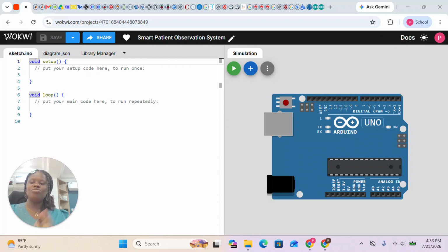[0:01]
And welcome back. So today we're going to be creating or simulating a smart patient observation system. It's a prototype healthcare monitoring solution that is designed to demonstrate how embedded systems and connected technologies can be used to support patient observation, improve response times, and enhance healthcare delivery, right? So the system is going to be using Arduino Uno, which is a microcontroller, right, to collect information from different sensors, which represent common conditions within a patient care environment.
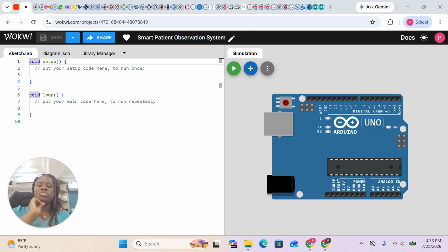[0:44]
So this sensor's reading will be displayed at the end of the day on a dashboard, which we're going to build later, which allows healthcare personnel such as nurses, or whoever is going to be taking care of this patient, to monitor the patient's conditions remotely. So this is what we're creating today, all right? We're building the embedded system, and at the end of the day, we're also going to build a dashboard, and we're going to see how to use this to communicate. So this is what we're doing today.
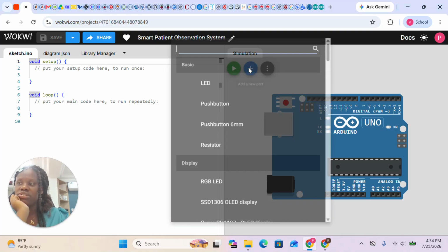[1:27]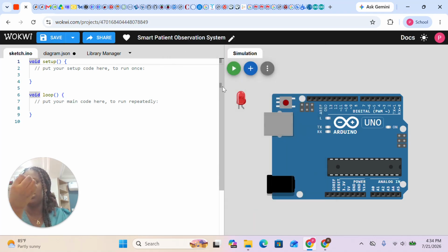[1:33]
So first, we already have our Arduino Uno, which is right here. Now, I mentioned some of the sensors that will be needed, and I'm going to explain why I add them. We're going to need an LED, and the LED represents the patient status indicator. So it indicates the status of the patient, right? Whether the patient's health status is okay. So we're going to change this to a green LED, right? And of course, for our LED, we need a resistor, which is 220 ohms. So I'm going to change it to 220 ohms.
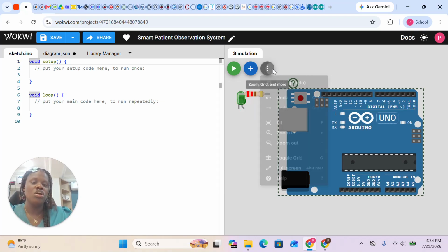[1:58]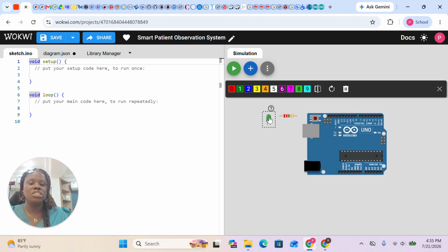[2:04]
So let's just zoom out so that we could have a very good simulation. This time around, I'm going to be connecting my resistor to the ground, which is the cathode of the LED. So I'm going to do this connection right here. And the other end of the resistor would go to ground, which is the GND. I like to change this color to black, so it indicates that this is ground or earth. So for the positive, which is the anode, I'm going to be connecting this to digital pin 8. So this is connected to digital pin 8. Like I said, this represents our patient status indicator.
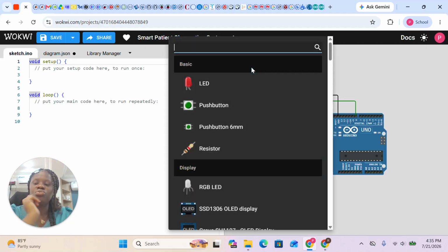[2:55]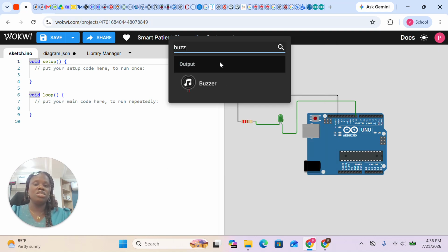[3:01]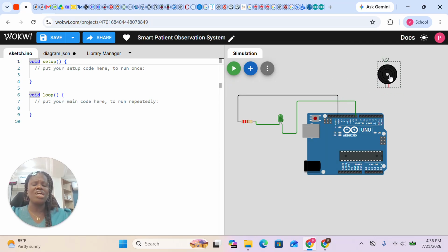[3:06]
And another thing that we're going to use for the patient indicator, which is the status of the patient, is a buzzer. So if the condition of the patient is not very okay, it makes a beeping sound. It would be like the life of the patient is being endangered, or the healthcare personnel has checked and there's something going on. So remotely, a healthcare personnel, without being right there, can actually see that something is wrong, the BP is high, or there's something not okay. So the buzzer makes a beeping sound. The black wire, we're going to connect to ground, basically. So this is going to ground. I'm going to change the color to black.
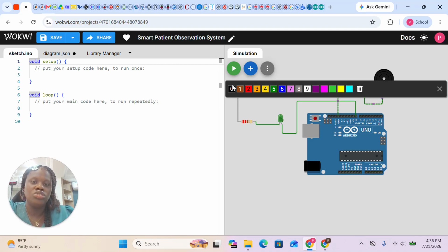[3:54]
I'm going to delete this connection because I don't like to connect over my device, so I'm going to go this way. It's just to make my connection very nice. So I'm going to change this color to black. And the positive side, I'm going to be connecting my buzzer to digital pin 9. So this is digital pin 9. Yes, this connection is done.
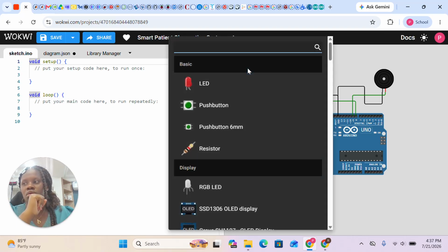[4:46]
Now we need the push button as an emergency call, right? To press down when there's an emergency. So once there's an indicator, the buzzer is already making a beeping sound, or something is happening, the push button basically is to tap to call a healthcare personnel. So when you press the push button, just like you have an app on your phone, and you tap the emergency button, it reaches out, you can easily use it to call. We use the Arduino's internal pull-up resistor, because it has that. So no external resistor is actually needed for the push button. So we're going to get the push button, which is already right here.
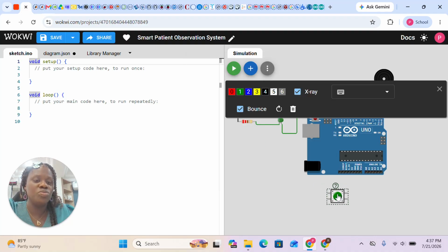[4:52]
And we're going to put our push button. So basically, you can use one side for negative and one side for positive, right? So the negative part, we're just going to take this to ground. Basically I'm going to connect this to my GND, and let me just change this color to black. And the other end, I'm going to be connecting to digital pin 7.
So digital pin 7. So I'm going to do this connection. So yes, digital pin 7.
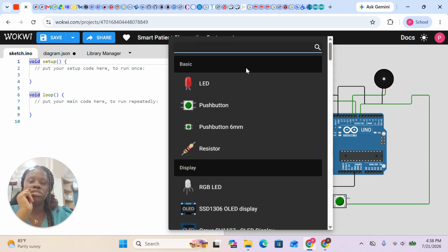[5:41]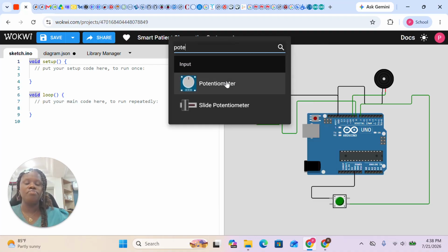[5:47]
So now the sensor we're going to add is the potentiometer, which is for the patient vital simulator. You just turn it, it's like a knob. So it's going to be checking the patient's vital simulator. That's what it represents. All right, so let's get a potentiometer.
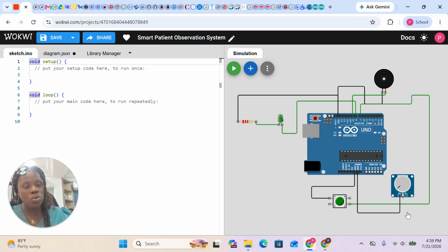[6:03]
The potentiometer has 3 pins. One is ground, so this goes directly to ground. The potentiometer makes it very easy. The signal goes straight to the analog pin, which is analog pin 0. So we're going to take this to analog pin 0. We have 6 analog pins from A0 to A5, and we have 14 digital pins from digital pin 0 to digital pin 13. While the VCC is the voltage, which is 5 volts, it requires 5 volts to power up. So that is for the potentiometer. We're done with the potentiometer.
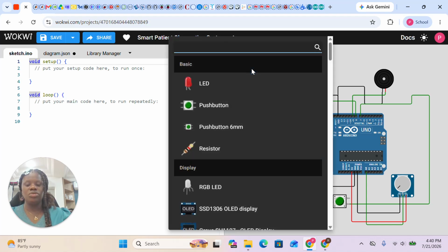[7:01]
So now we need the LDR, which is the room lighting. This forms a voltage divider basically. In this case, it's just going to be reading, because the LDR is a sensor that is basically used to sense light. It's a light sensor. It's called the light dependent resistor, or some people call it a photoresistor. The real LDR actually has 2 pins, but we also have some LDR sensors that have 3 pins. The one right here on Wokwi actually has 3 pins, so we're going to be using that. So we're going to get the photoresistor, which is the LDR sensor.
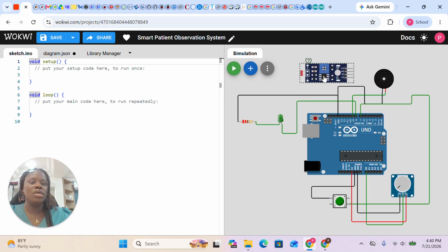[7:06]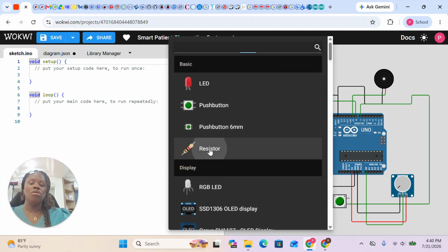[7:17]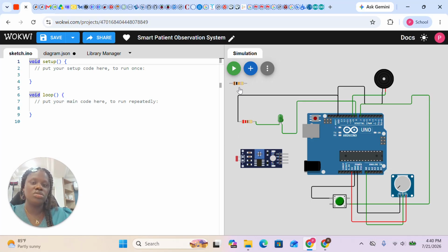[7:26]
So let's place it somewhere here, basically. If you're doing the physical connection, you actually need a 10K resistor, which will connect to the AO and the AO to the ground. So I'm going to change this to 10K. I'm going to connect this here, right here. So AO connects to this, basically, and AO connects to this, and it then takes this to A1 on the Arduino Uno.
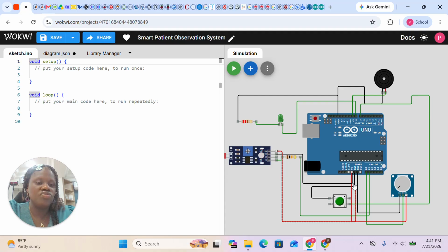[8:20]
So yes, GND goes to GND. But if we were doing the physical connection, I'd connect to AO and the other end would go to the GND. That's the way the connection works. But since we don't have that, let's just do this now. So let's just do a connection. This goes to GND. And VCC, of course, goes to 5 volts. We're going to take this to 5 volts. Yes, so we're done with all our connections.
So basically, like I said, this is a smart patient observation system. That's what this is, right? And the problem we're trying to solve is that a lot of times in healthcare, in hospitals, healthcare professionals often monitor many patients at the same time, and manually checking patients can be quite difficult. I'm speaking as someone whose mom is a nurse. It is very difficult. It is tedious, especially when we have lots of patients, especially when you go to a general hospital in Nigeria. It can be very tedious.
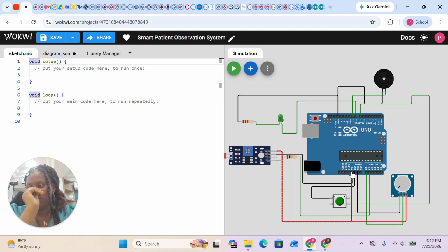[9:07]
It can be very tiring. So in developed countries, or places with very good modern healthcare, they rely on monitoring systems that continuously collect patient information and notify the healthcare workers whenever attention is required. So they don't have to be there. You just have a system. But it's not all hospitals, especially in rural areas or community health centers, that have that system.
So we're trying to make life easier so that even the community health centers can actually have this technology in there. It helps them to put a lot of things together, to do other things, attend to other patients at the same time. So there's this button put beside the patient, you just tap on it. These are some of the things that help them and make life easy for them at the end of the day.
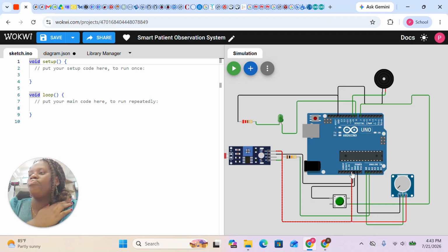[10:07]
So the Arduino Uno is the healthcare monitoring controller. The LDR is the patient's room lighting condition that just changes. The potentiometer serves as the patient vital reading. The push button is the emergency call button. The LED stands for the patient status indicator, switches the emergency alarm. The buzzer is the emergency alarm.
And of course, we're going to create a dashboard using an AI tool, which will serve as the healthcare monitor. So the nurse or the healthcare practitioner just has that at their end. And so this is basically how it's going to work. Let me explain the system work again. The Arduino itself continuously monitors the room lighting, the patient vitals and the emergency button.
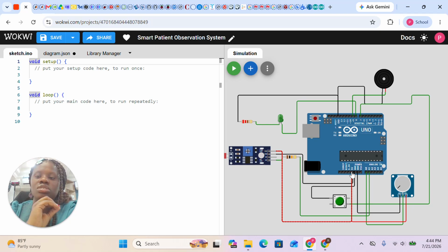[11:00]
Then the Arduino checks whether the room has become too dark, right? If the room is too dark, which is why the presence of the LDR is there, or the simulated patient vital exceeds a safe threshold, or the emergency button is pressed, then depending on the situation, the system automatically activates a visual or audible alert.
If the situation is normal, there are no alerts. If there's low room lighting, the LED turns on. If there are high simulated vital readings, the LED turns on. If the emergency button is pressed, the LED and the buzzer are activated. So the dashboard, which the healthcare practitioner will be seeing, displays the patient status, the observation alerts, the room condition, emergency notifications. If the patient presses the emergency button, the healthcare practitioner is notified and attends to the patient, right? So that is basically all for the system.
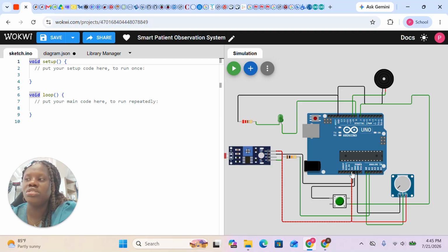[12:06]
So let us go to the coding part. Of course, we've done the design, so it's now for us to write our instructions. I'll start with my comments so that anyone reading this would understand what this project is about. I always tell people, start with your simulations. Once the simulation is working, you will have no problem with a real life project working. So let's just write a comment for anyone seeing this to understand what the project is about. We're creating a smart patient observation system.
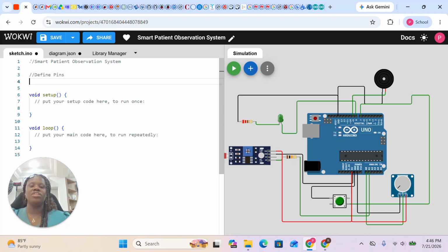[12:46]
So now it's time for us to define our pins. Now we've done the simulation, we need to tell the Arduino IDE that I assigned this pin to this component. I'm going to make it a constant because it's not changing anytime soon. I always advise to use camel casing when naming your variables. So this is the name of my variable, LED pin, and I'm assigning it to pin 8, which is the number there.
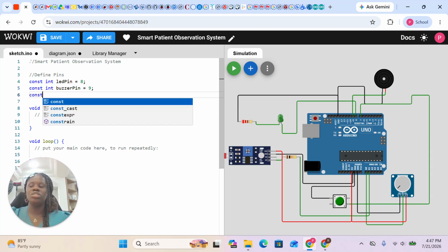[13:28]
So const int, where int stands for integer, which is whole numbers, either positive or negative. Buzzer pin, I connected the buzzer to pin 9, do not forget. Now the button pin, I connected this to pin 7. And the potentiometer pin, I connected this to A0. And the LDR pin, I connected this to A1. Always terminate at the end of the line.
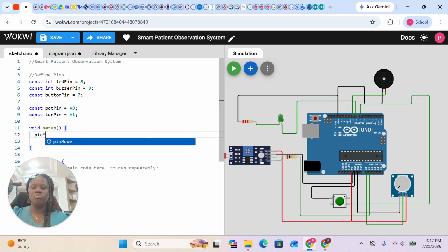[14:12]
So now it's time for us to set up. You need to indicate that the LED is an output device or component. The button is an input. And the buzzer is an output because it's emitting sound. You need to let Arduino know. So we're going to be defining the pin mode now. Pin mode, LED pin is output, and I'm going to terminate this.
Pin mode, buzzer pin is output, and I'm going to terminate. Pin mode, button pin is input, so I decided to use the input pullup, or you can use input pull.
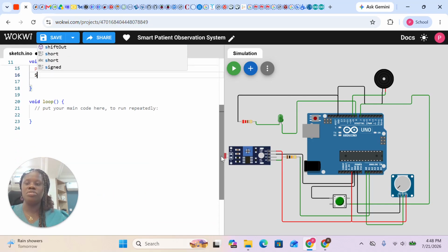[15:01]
Because I want to see some things on my serial monitor, like I just want to see things right here. Since I don't have the physical components, I want some serial display at the bottom part, so I see different levels. So I'm going to be using my serial print. I need to use my Serial.begin to tell you that it started. So this is for the serial monitor basically. This is 9600. I'm using Arduino Uno, so it's 9600. So yes, we're done with that part.
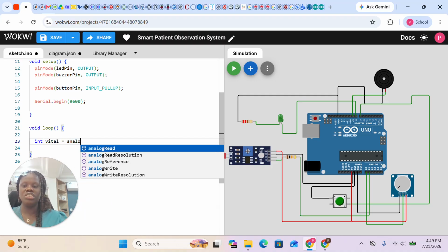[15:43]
I'm going to be writing every instruction in the loop. So what I want to happen should be in the loop. Now I'm going to create a variable for the vitals, and it's going to be reading the potentiometer. Remember, the potentiometer is for vitals, to check our vitals. So let's create a variable called vital, and we're going to tell it analogRead. It should read the potentiometer pin, and for the LDR, which is to read the room lights, analogRead as well. It's going to read the LDR pin.
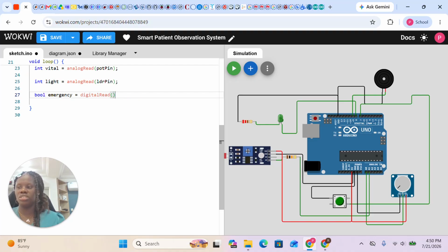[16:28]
The termination, the semicolon there, is just like at the end of a sentence, you put a full stop. So that's the same thing I'm literally doing. So bool emergency. This is the boolean value, it only accepts the real value. So digitalRead. Now this is for the button itself. So we need to read the button pin. It can only accept either LOW, HIGH, true, false. That's what boolean means. So it can only accept either one of these values. That's what boolean basically is. So we're assigning it to LOW, right? Now we're going to create another one for warning. It indicates warning. So the warning should be declared false, either true or false.
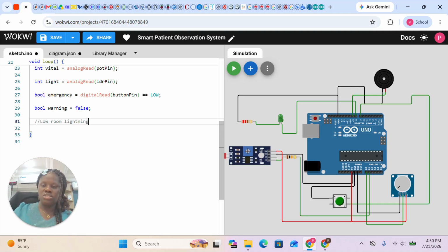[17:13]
Now if there's low room lighting, so probably while the patient is in the room, the light is low. So this is just a basic project, right? So other things can be added to it. You can expand this to be much more than this. You can add temperature to sense temperature, and the other sensors, basically the smoke sensor, the gas sensor. But for now, for just this project, it's something very basic, very simple, just using the LDR. So if the light coming into the room is less than 400, the warning would be true, right? So let's close that part and let's move on.
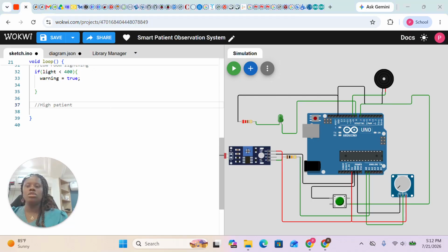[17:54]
So that is all for that, and if we have a high patient vital simulation, we're going to be telling it, if vital is greater than 700, then what should happen? Warning will be true. Of course, once the vital has been checked and it's greater than 700, then warning will be true. So now, let's do another condition. This is for emergency. If there's an emergency, what should happen?
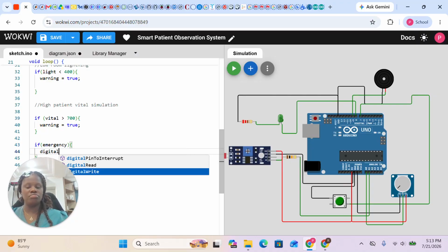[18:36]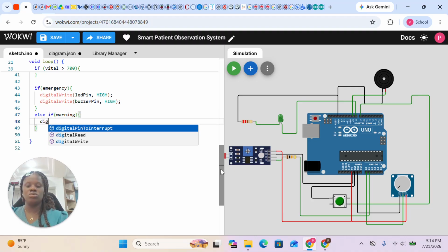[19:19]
So we need our LED to come up. So the LED pin, when you have HIGH, it means the pin should come up. That's basically what that means, right? The buzzer is also the same thing. The buzzer will come up as well. And if that is not the case, if it's just a warning, what should happen if it's just a warning? The LED pin would also come up, but this time around, the buzzer would remain low.
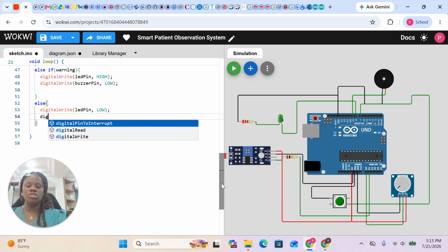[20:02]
Okay, so else, if that is not the case, both the LED and the buzzer will go off. So our LED pin would not come up, because it's a stable situation, and the buzzer at the same time would also not come up. So this is the situation. One will have a stable situation, nothing is coming up, no indicator, nothing.
So now we have a serial print. Remember I said that we're going to be using the serial monitor at the bottom of this.
So we're going to use serial print. There's print line, but we're going to use serial print. So say vitals, so it's going to display our vitals. Let's put this in double quotation. These are called strings. You have to put them in double quotation. So it has to be in double quotation.
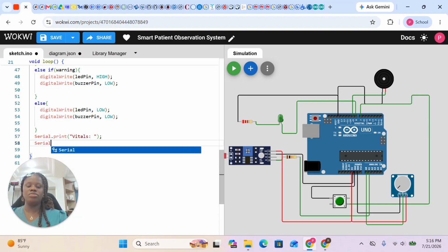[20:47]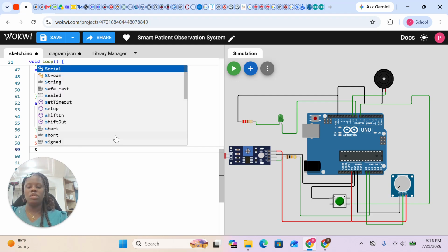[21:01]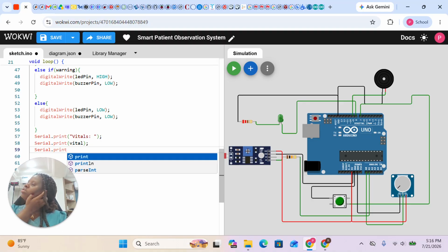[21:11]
Then Serial dot print again. So what should we print? Should print out the vitals. We want our vitals to be printed. Then we also want the lights. Serial dot print. I'm going to put a comma in between. It prints the lights.
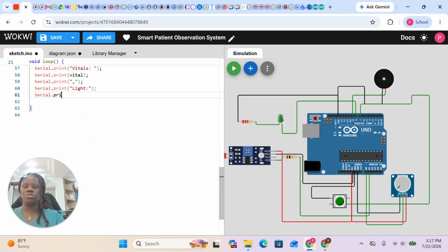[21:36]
Lights. So then Serial dot print. You can actually use print line, but I've decided to use print. So they both work, right? I could use that as well. So this is then another Serial. This is built on C++, so it is case sensitive, and it's very important that you always put that into consideration.
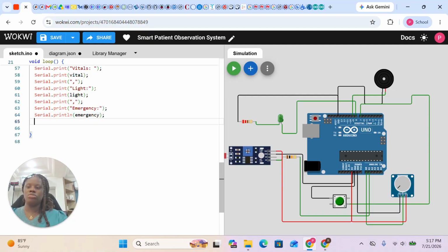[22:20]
So for the emergency, I want to use the print line. So that's what I said. I'm going to print out emergency, and I'm going to delay. Delay means to wait. So let's make it wait for 200 seconds, and that's basically the end of the instructions.
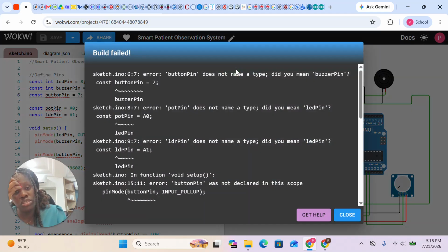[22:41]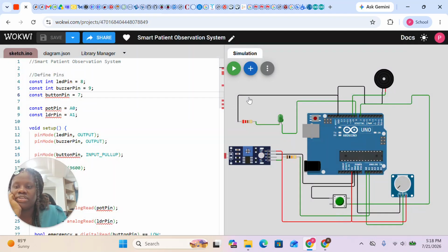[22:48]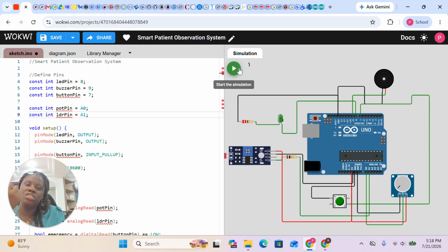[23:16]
That's it. So if we run this simulation, let me just save my work. If I run the simulation, then we'll see what would happen. Let's click to run and see what happens. So I have an error, and let's see why. Because we do not indicate the data type, that's why there's an error. It's very important to always indicate the data type of whatever it is you're doing. You need to indicate if it's a float value or an integer, and these are some of the things that we know.
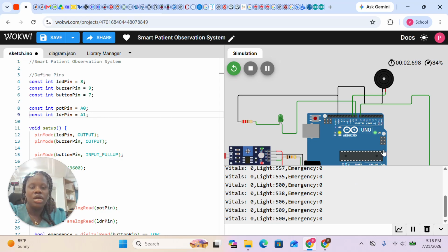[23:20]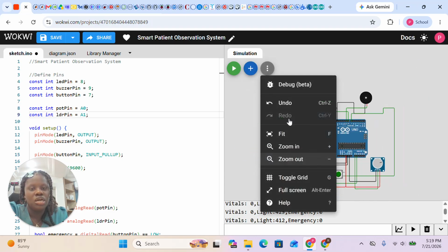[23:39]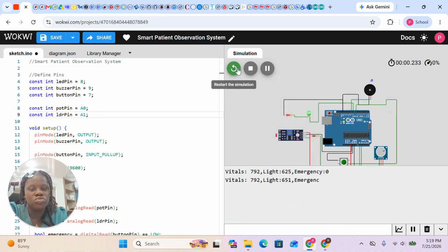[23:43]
Okay, yes. So this is working right now. Can you see? It's showing vitals 0, lights 400, and emergency nothing. So what happens when I turn the potentiometer? Let's stop this and let me zoom out a bit. I want everyone to be able to see, and let's run it again so that we can see this. Okay, so if I press the push button, did you notice something?
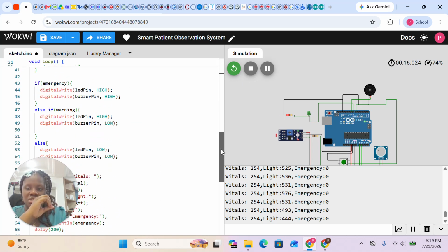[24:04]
There's something I wanted to tell you. You can see that the buzzer here is not emitting sound, and it's because on Wokwi it uses a passive buzzer, so you cannot use digital writes. It's only for an active buzzer. So instead of digital write, we use tone. I'm going to change this instruction to tone, and I'm going to indicate how high. So I'm going to use 2000, and noTone means nothing, it shouldn't emit any sound. I think 2000 is a lot. So let me just make these changes.
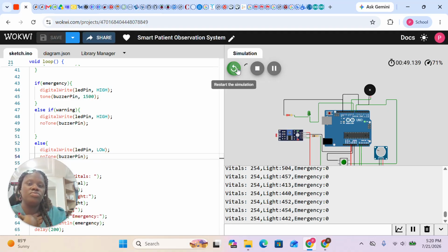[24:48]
These are some of the things that a lot of people do not know, that when you're writing instructions for passive buzzers, you can't use the same thing. A passive buzzer uses tone and noTone, and it's also very good when you want to create a project where you want to play different sounds, right? So this is it right here, and did you see? You can actually hear the sound. So when there's no emergency, nothing is happening.
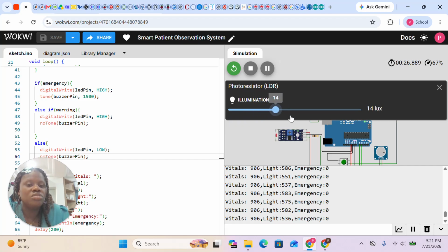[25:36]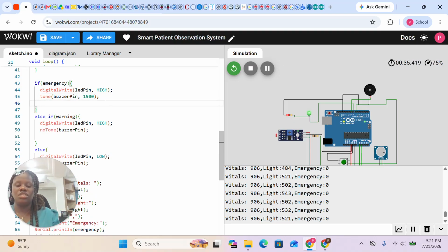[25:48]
The moment I change the potentiometer, the vitals are changing. What if I switch the LDR, which indicates the number of lights? Can you see? Vitals remain stable, lights keep changing, and anytime I press the emergency button, there's an emergency and there's a beeping sound. And if you want to have different tunes over time, you could do delay 50 and create another tune.
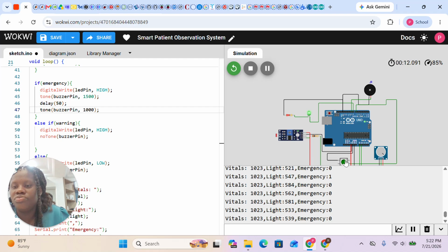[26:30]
So the buzzer pin, and you want it like this. It just creates different tunes, and that's it basically. So let's try and see it work again. You see that the sound is different. So that's basically it.